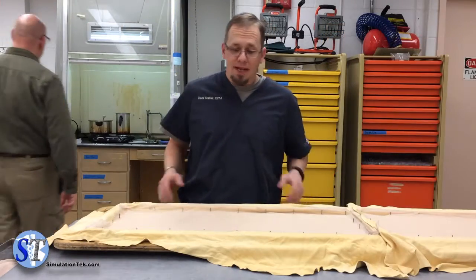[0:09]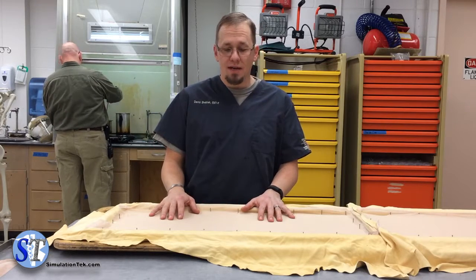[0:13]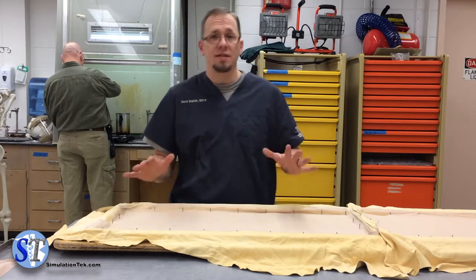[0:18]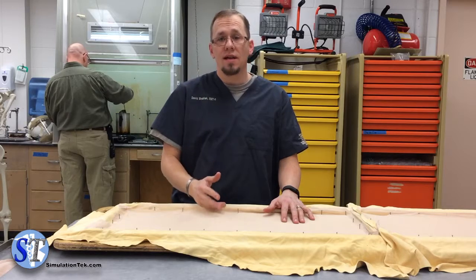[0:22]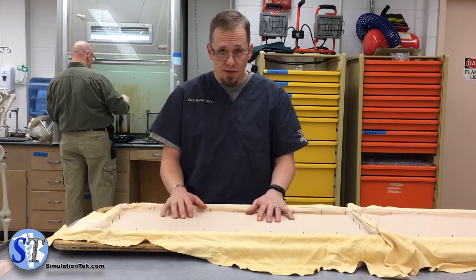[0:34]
So today we're going to talk about how we make the chest tube tissue that we use in our chest tube trainers, and it really serves as a base for a bunch of stuff we do. After it's used for chest tubes, we end up reclaiming it, using it for cric tissue, stripping down the gel wax, using it for our arterial line trainer, really a host of a lot of things, but it all starts here when we build it for the chest tube tissues.
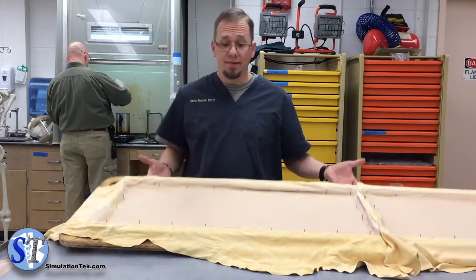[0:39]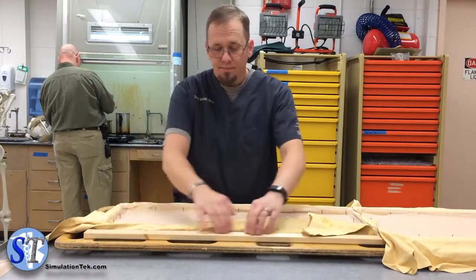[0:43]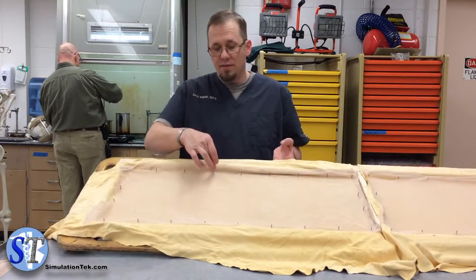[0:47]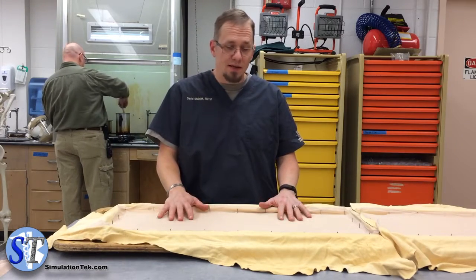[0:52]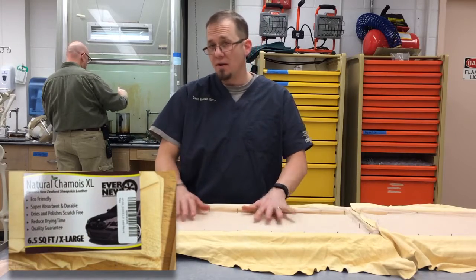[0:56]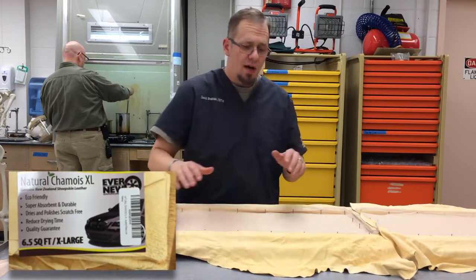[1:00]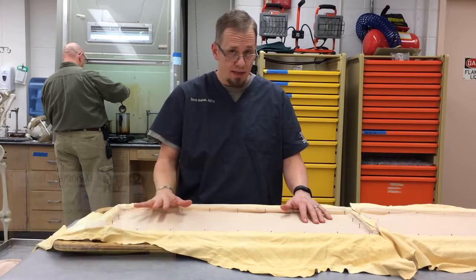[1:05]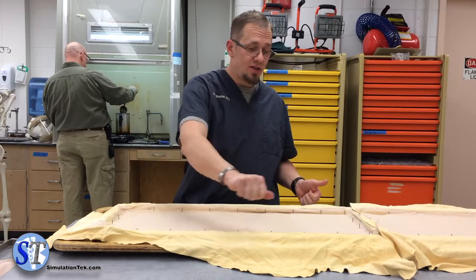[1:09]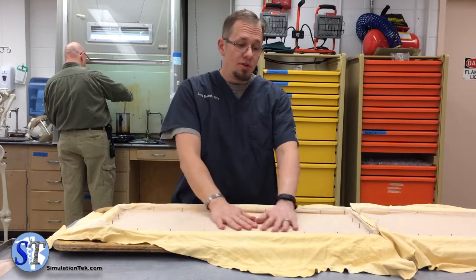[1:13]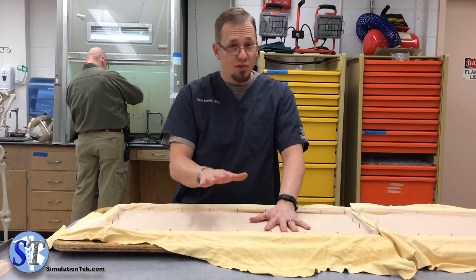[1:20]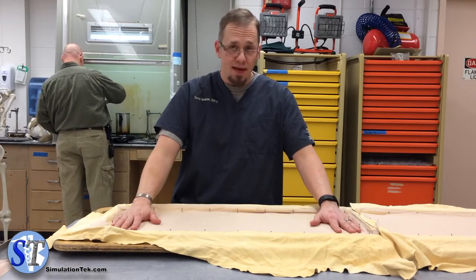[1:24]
And then we stretch that over tight, not taut. So you want it without big wrinkles, but you don't want it tight as a drum. And then over that we put power mesh. Just do a Google search for that and you should come up with that. And that is our base layer.
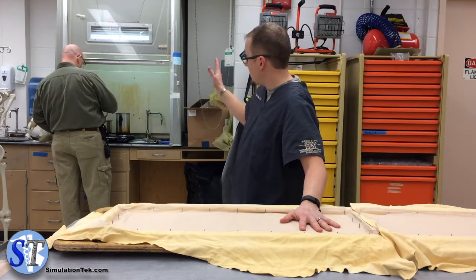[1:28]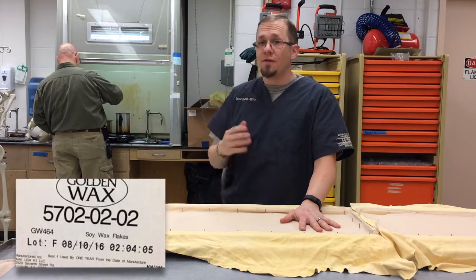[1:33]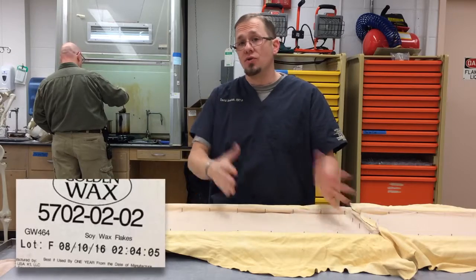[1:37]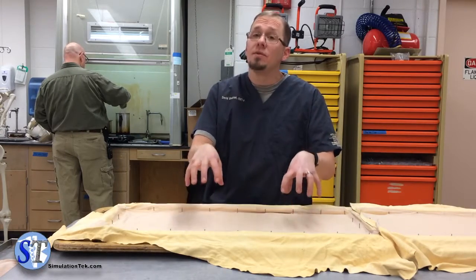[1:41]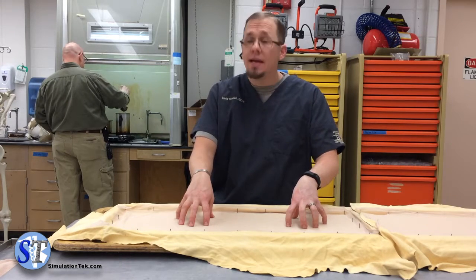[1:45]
From that point on, we go over to our heating element here, where we've heated up medium density gel wax. Your first pour, you want it to be about 190 to 200 degrees. You don't want it any hotter than that, or you'll actually burn the skin. So at this point, you want to put on your safety equipment, because this is dangerous. You don't want to get any on you. It keeps its heat and it will burn like crazy.
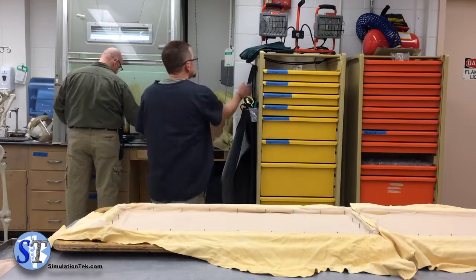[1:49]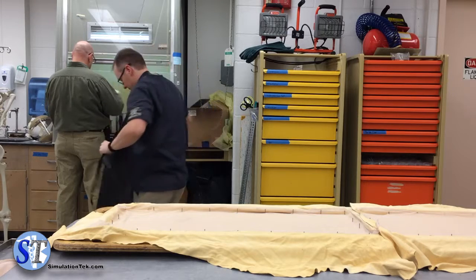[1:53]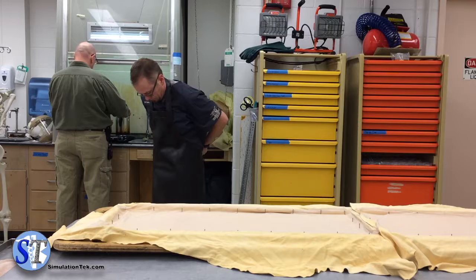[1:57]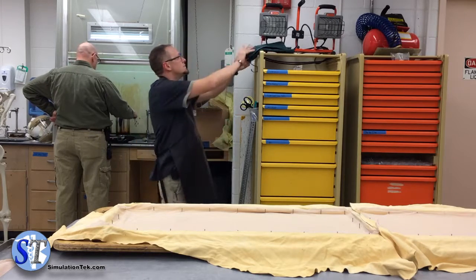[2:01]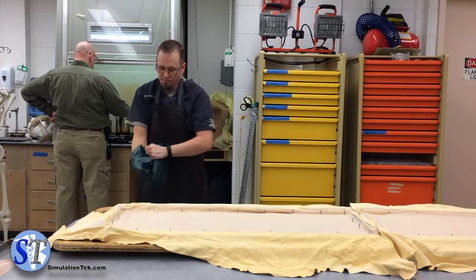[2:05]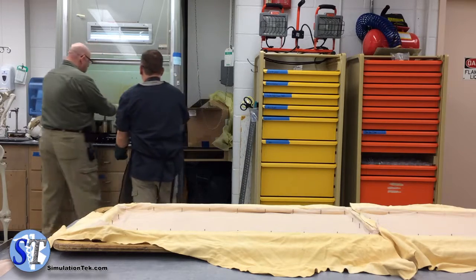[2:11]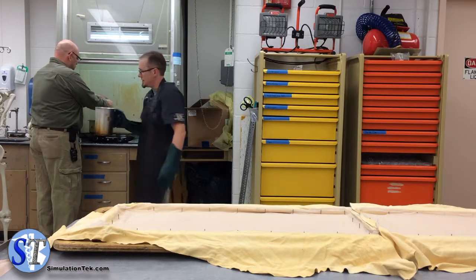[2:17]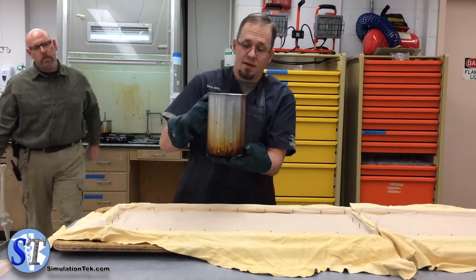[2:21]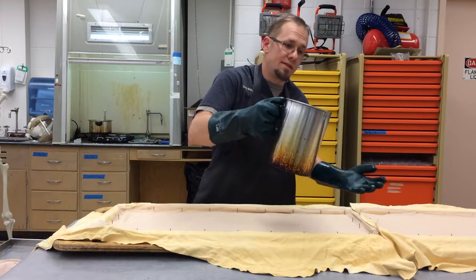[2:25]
Pardon me, Phil. All right. So we've got our pitcher. Using safety, we're going to make the first pour. I pour it a little bit high.
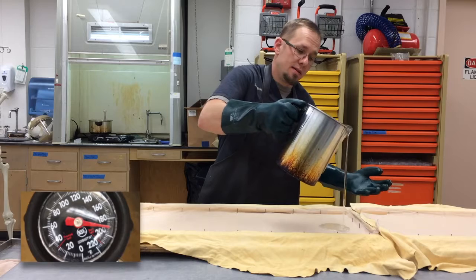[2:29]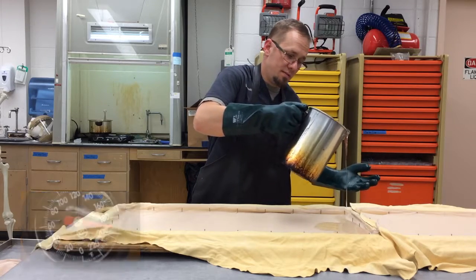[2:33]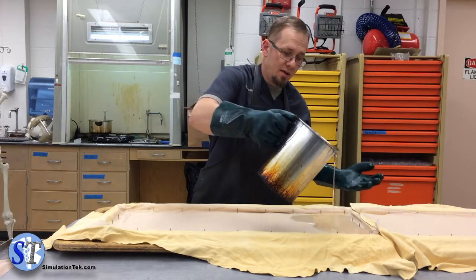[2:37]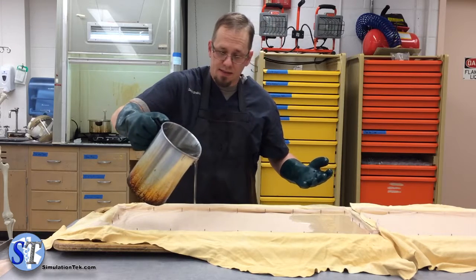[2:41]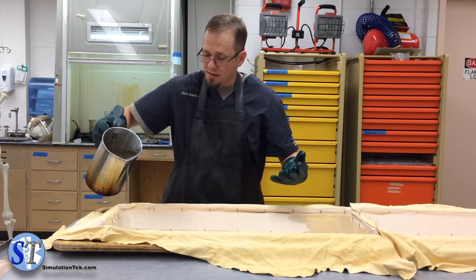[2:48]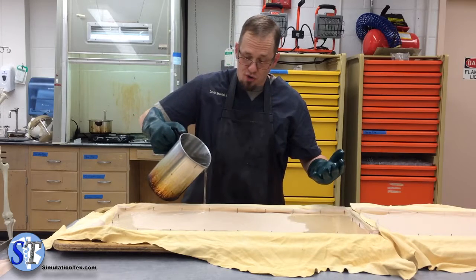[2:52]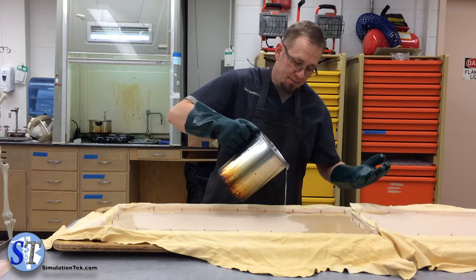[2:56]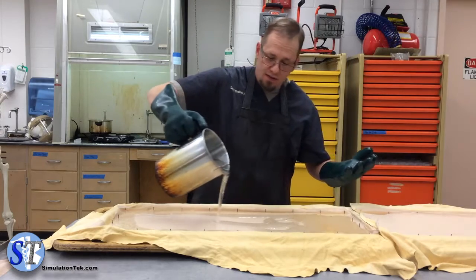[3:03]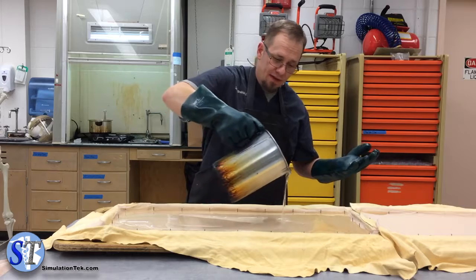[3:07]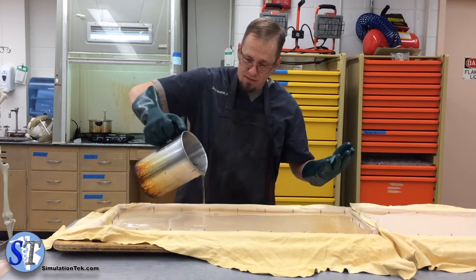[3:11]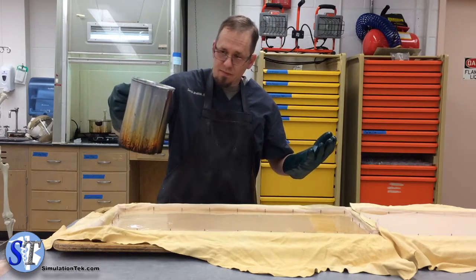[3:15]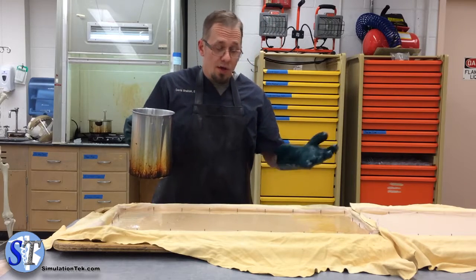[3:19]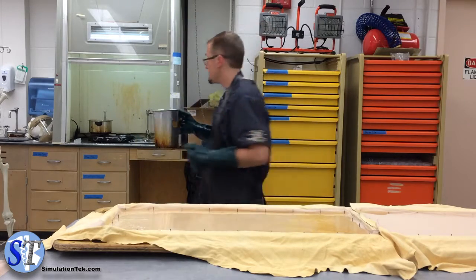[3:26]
You want to just kind of go around the outside to get all the nail heads covered up, and that kind of seats the fabric. Make sure you get a few pockets of air, and where there's no gel wax on there. You don't need to be full. Just a good coverage over everything is your number one priority. All right, at this point we're going to let it cool, and then we're going to come back and do another layer of power mesh and another layer of gel wax, but we're going to do that in a minute.
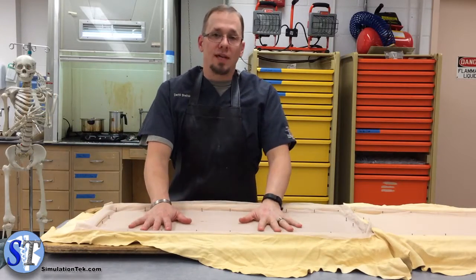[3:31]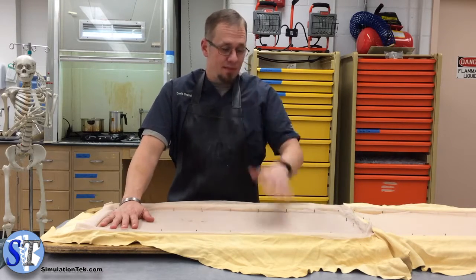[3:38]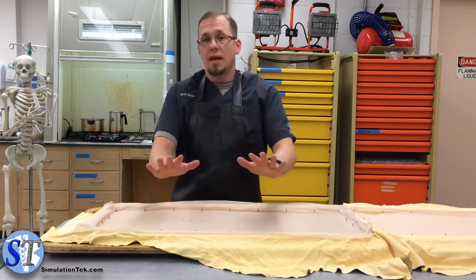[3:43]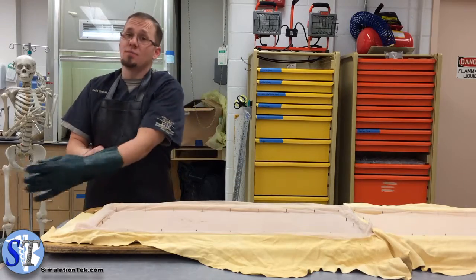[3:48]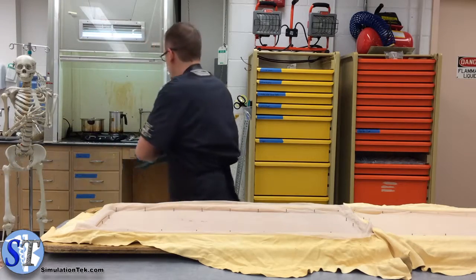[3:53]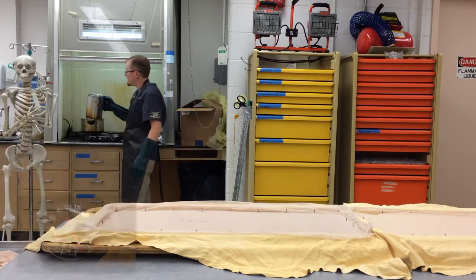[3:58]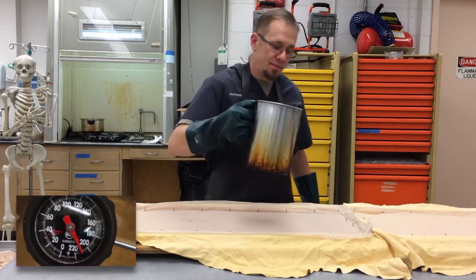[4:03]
All right, so now we've let that cool down to an appropriate temperature that you can actually touch it and work with it now, and I put on another layer of power mesh. And again, tight, not taut, so if you see, it's nice and flat throughout. And we're ready for our final layer of gel wax, which means more safety equipment. Very careful not to splash this.
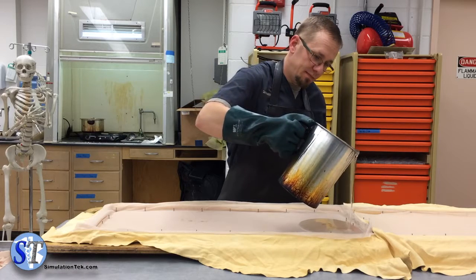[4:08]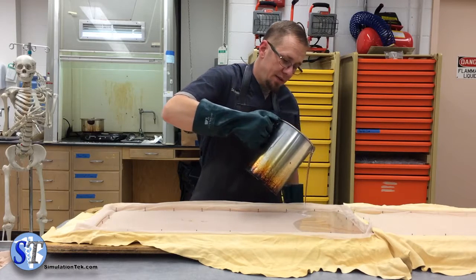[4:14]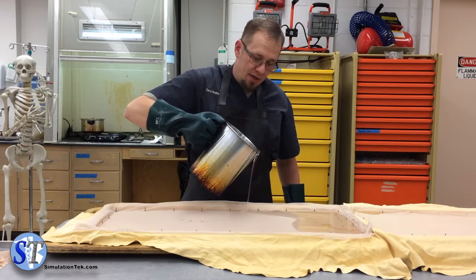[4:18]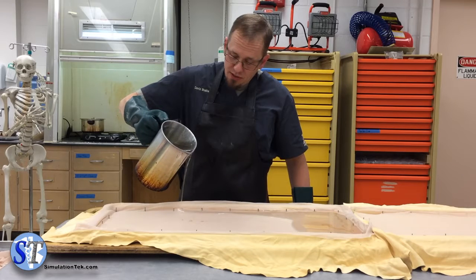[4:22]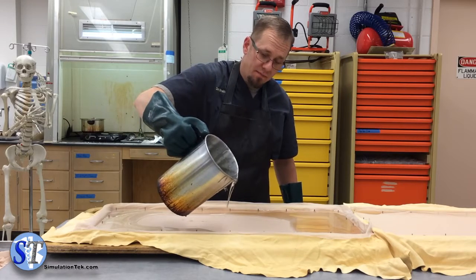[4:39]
Nice thing is, if you use too much, usually when you go to the trimming process after demolding, you will just reharvest it, melt it down, use it again. And a lot of times that's what we'll do with our old tissues after we've used it a few times, is if the wax is still good, we will just strip off the different layers, melt it down, use it again.
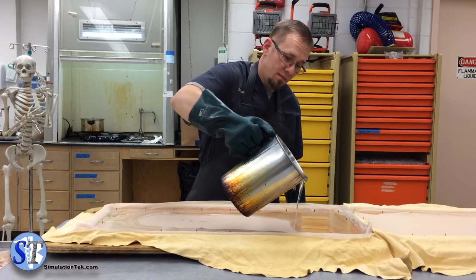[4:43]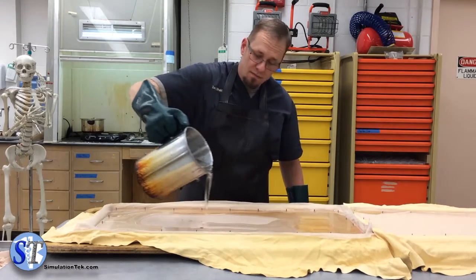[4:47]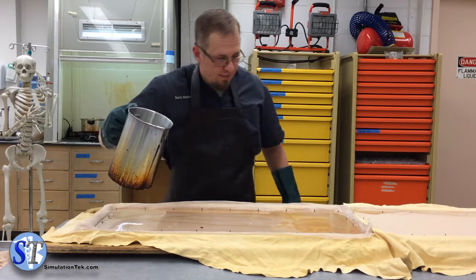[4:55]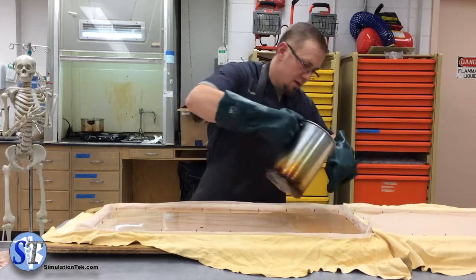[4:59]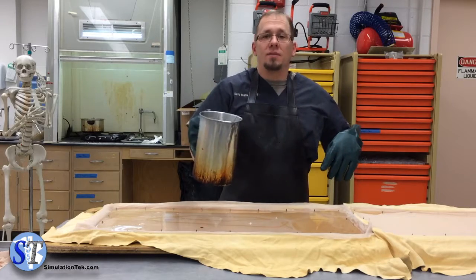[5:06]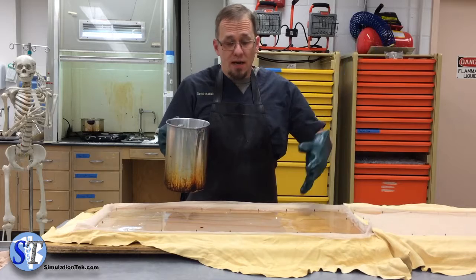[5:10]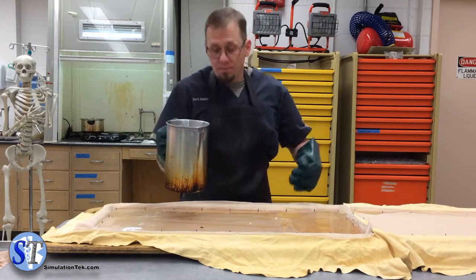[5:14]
Okay, now we've got nice even coverage throughout, and we just wait for this to cool down and demold it, cut it. We put plastic backing on it, and it'll be ready to go.
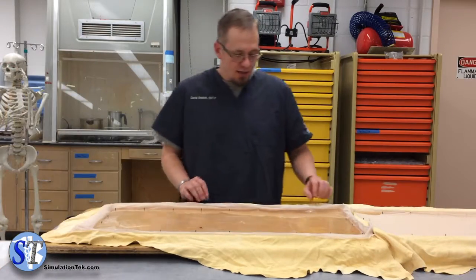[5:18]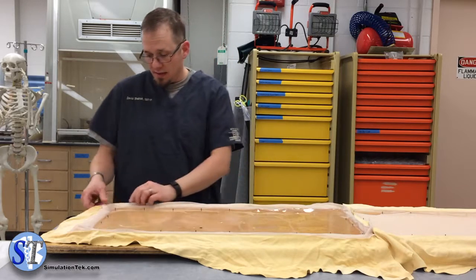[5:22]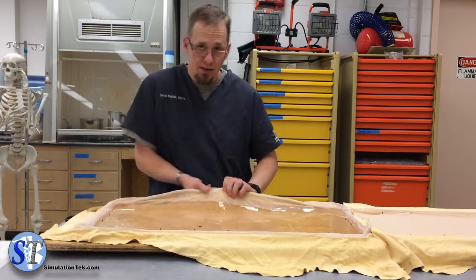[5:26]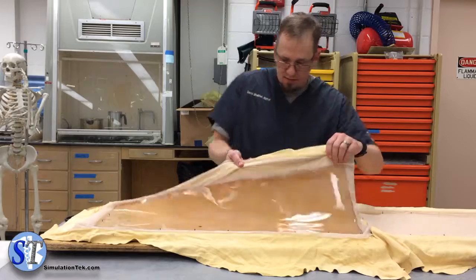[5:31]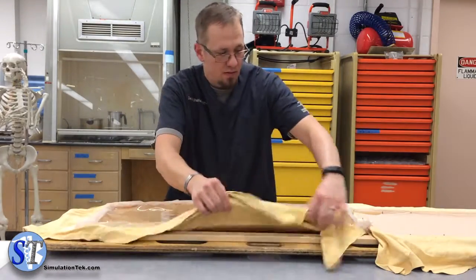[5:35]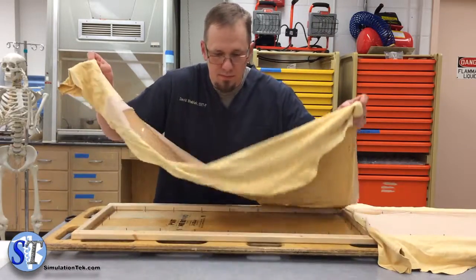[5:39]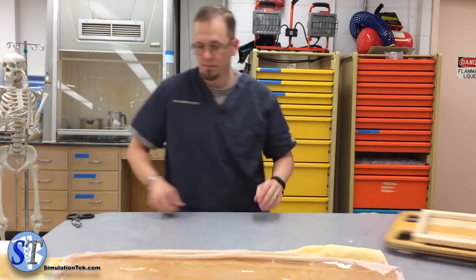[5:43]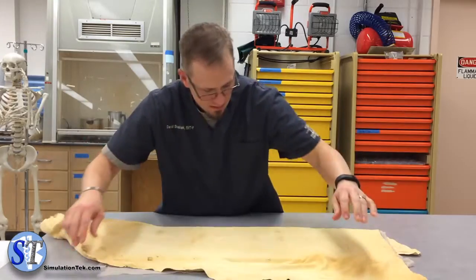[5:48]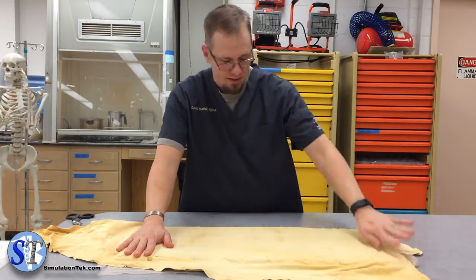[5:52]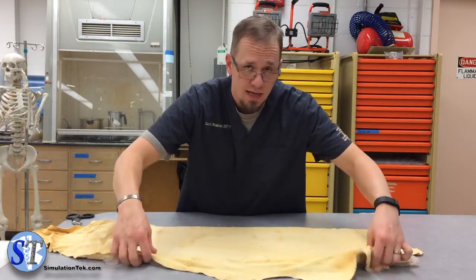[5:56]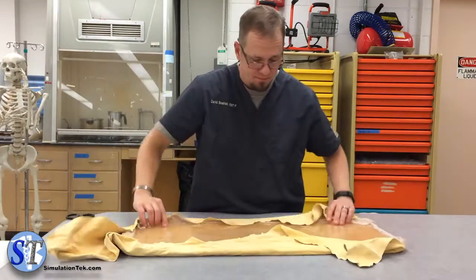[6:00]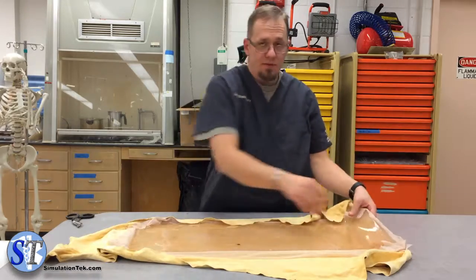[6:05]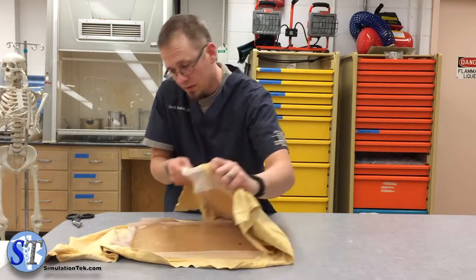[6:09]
Okay. So now we've allowed it to cool down, and we're ready to demold it. And basically, just pull up. Because there's no actual heads on the nails, you can just pull it straight out of the jig. Alright, looks like it turned out pretty good here, and we're just ready to cut it up into 4 sections, put the plastic on the back. The easiest way I've found to do that is just fold it in half, cut along the fold.
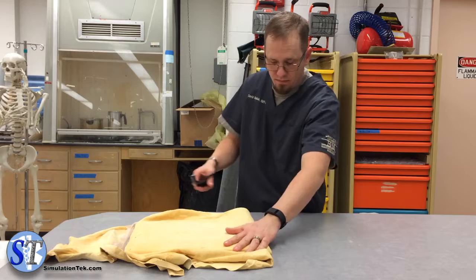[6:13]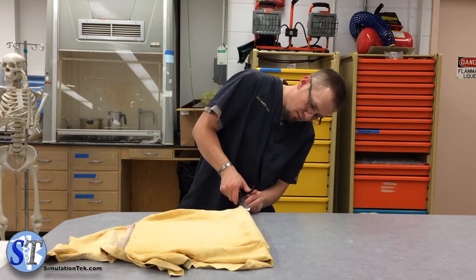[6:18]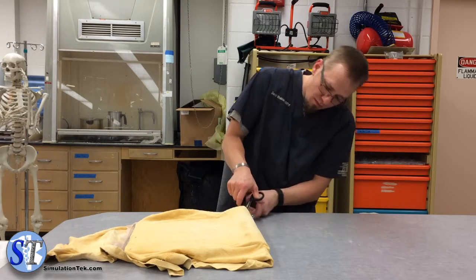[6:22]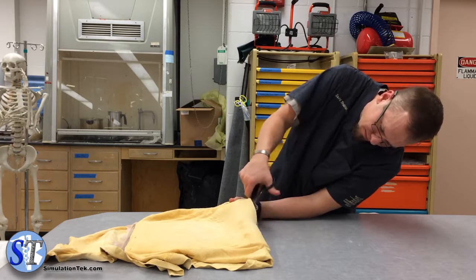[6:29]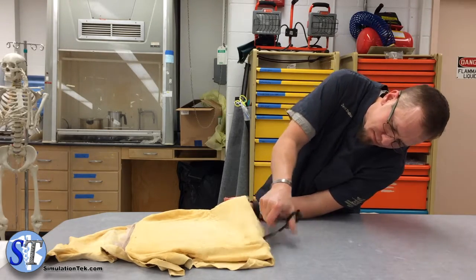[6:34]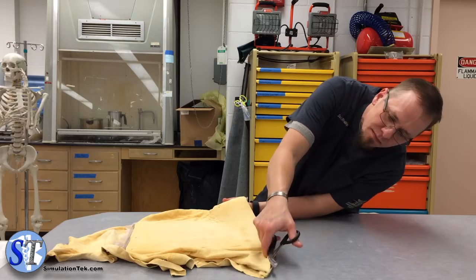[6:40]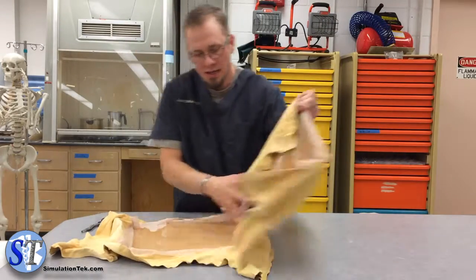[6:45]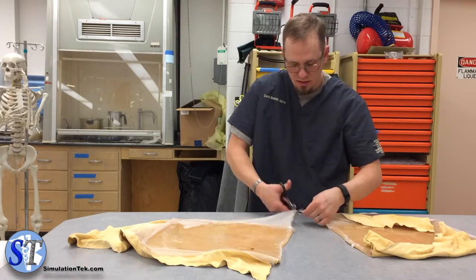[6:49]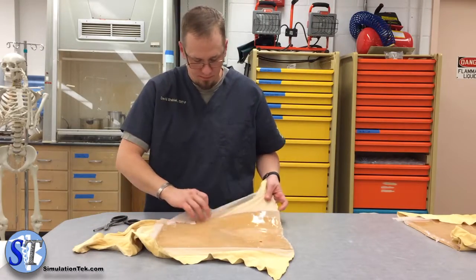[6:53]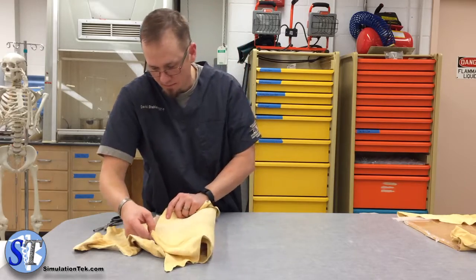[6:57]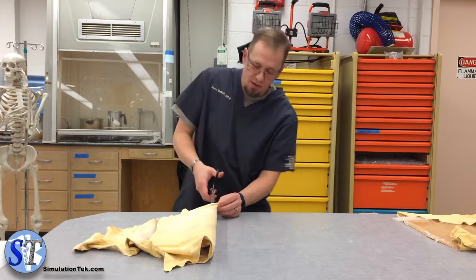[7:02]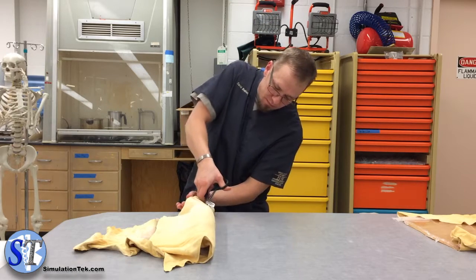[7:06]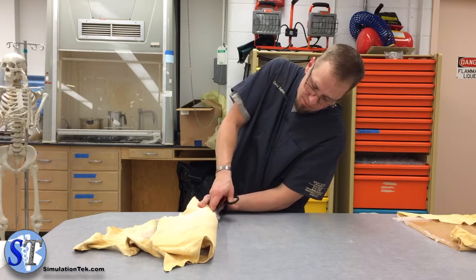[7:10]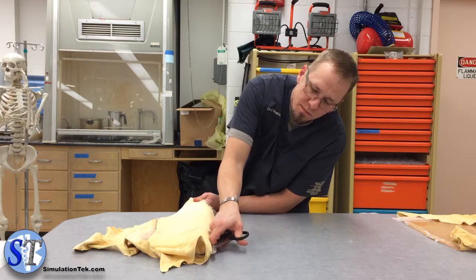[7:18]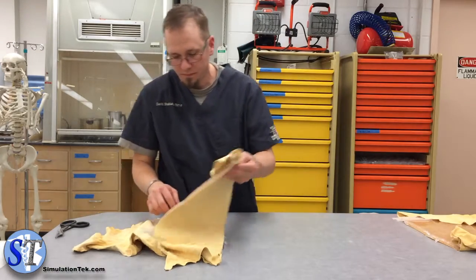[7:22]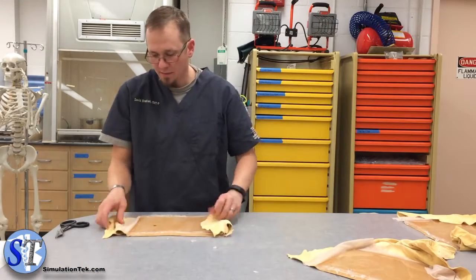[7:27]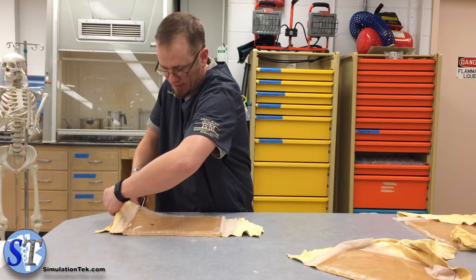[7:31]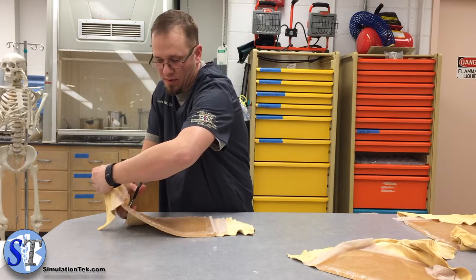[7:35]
Set this aside, if it'll let me. Cut it in half again. This just gets it down to a size that works real well for our trainer. So from that point, I just cut off the excess. Nice flat edge. Pretty much right along the nail lines for how we set it up.
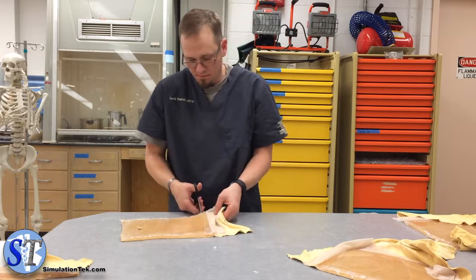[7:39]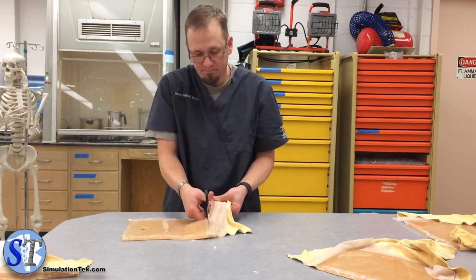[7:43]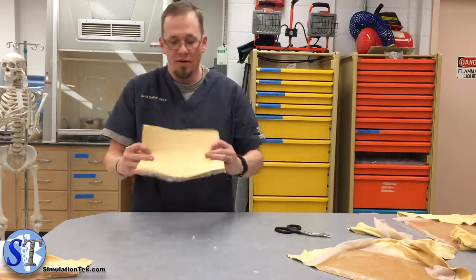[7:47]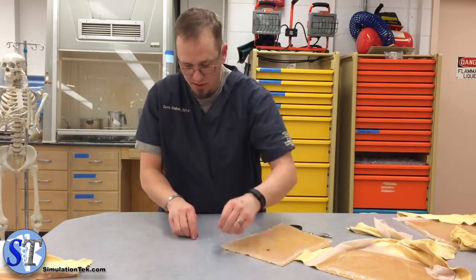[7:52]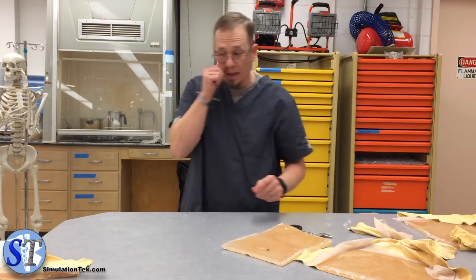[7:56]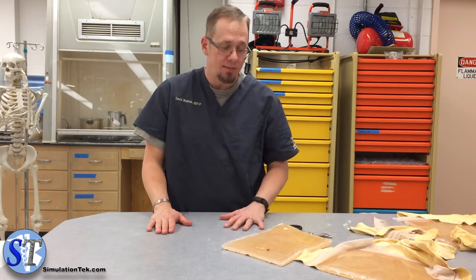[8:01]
There we have it. We have 1 of 4 pads that you're going to get out of that jig that we had set up. And like I said, more information on that jig and anything else, you can download the guide on our website or ask questions.